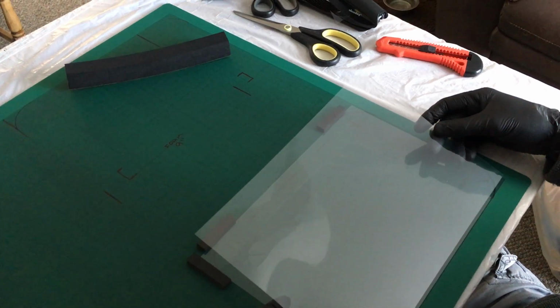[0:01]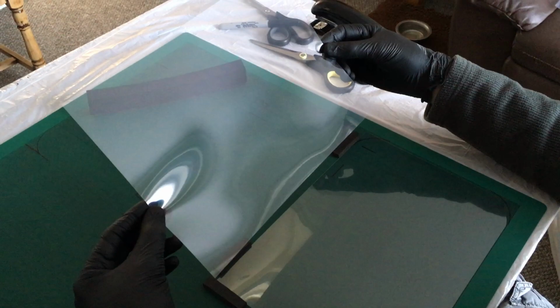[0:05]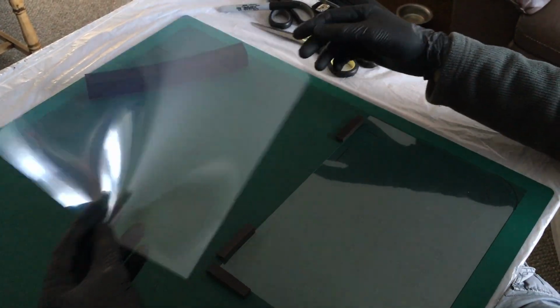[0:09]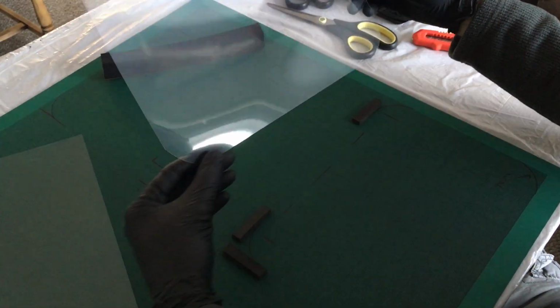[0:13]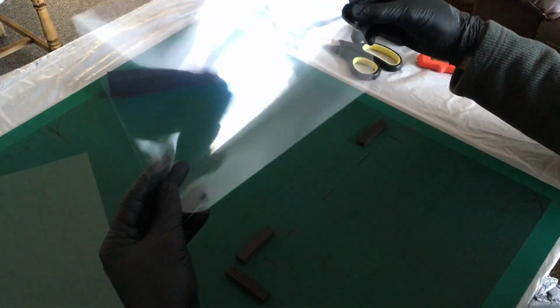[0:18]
Okay, so step one is you take your acetate sheet and you trim the bottom corners with an approximate 40-50 millimeter radius, so you achieve something like this, keeping these transitions as smooth as possible.
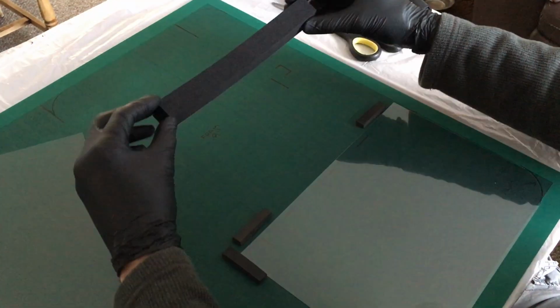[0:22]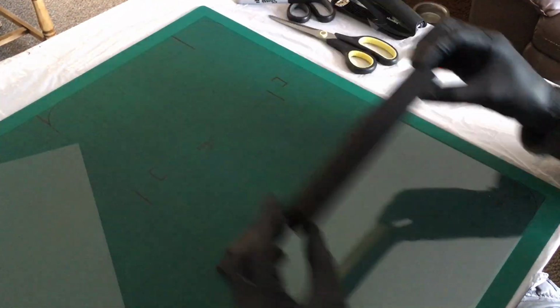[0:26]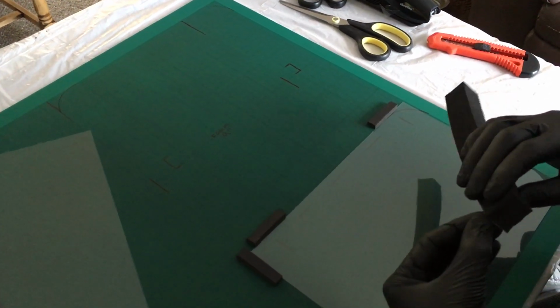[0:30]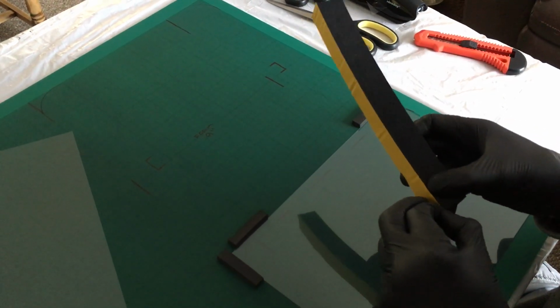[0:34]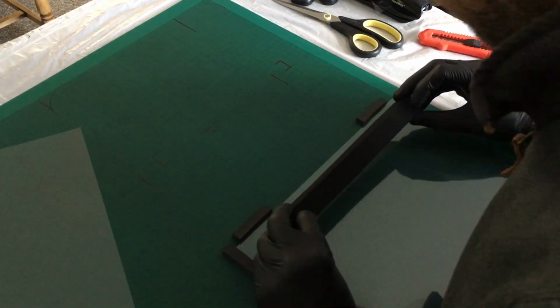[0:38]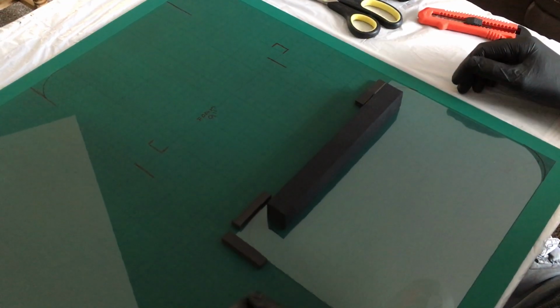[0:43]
Next, you take a 9-inch long piece of foam and you position that about 10 millimeters from the top edge and as central as you can be without being too fussy about it. So something like that's fine.
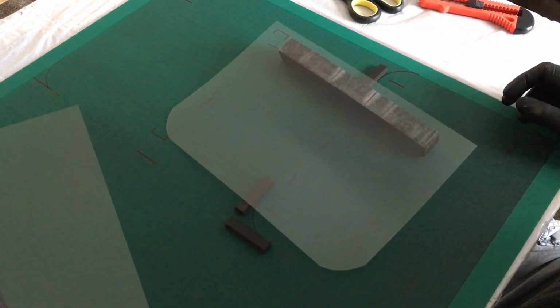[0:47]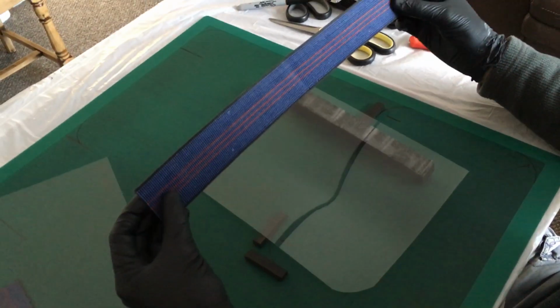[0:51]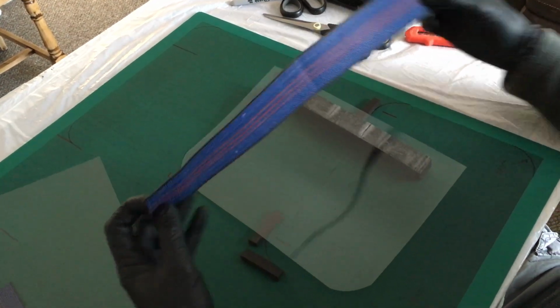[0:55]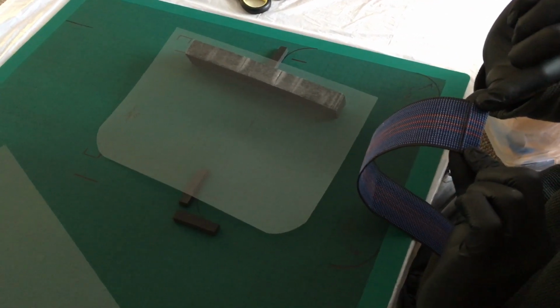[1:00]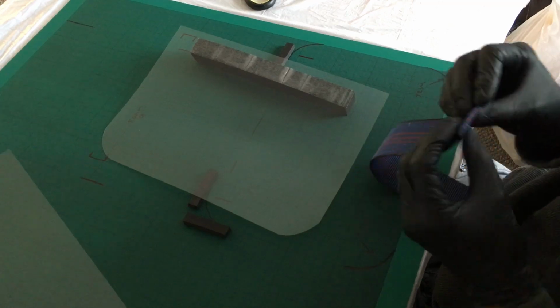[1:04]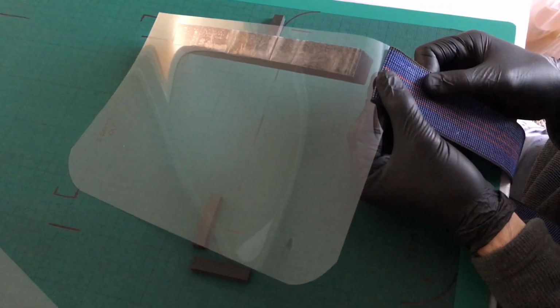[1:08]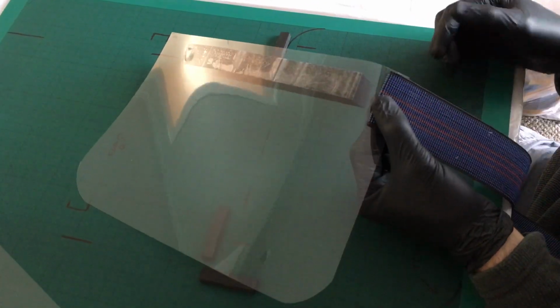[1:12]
You then take 16 inches, I believe it is, of elastic. I'll have to double check that. And you create a little return, it's probably about 15 millimeters. And then you place that on the front, top corner. I've been leaving a couple of millimeters at the top there.
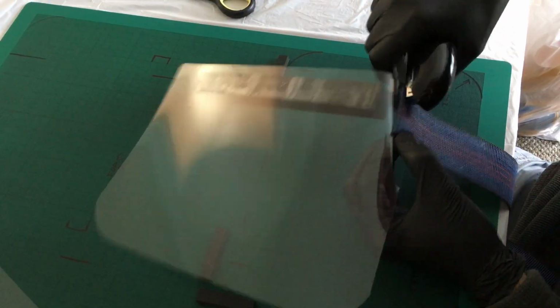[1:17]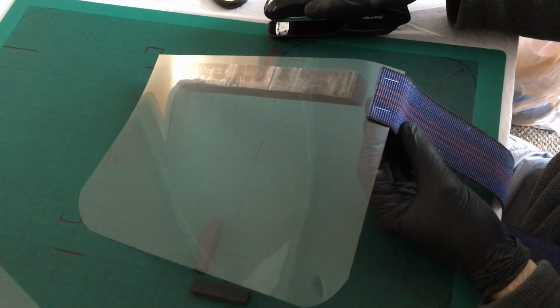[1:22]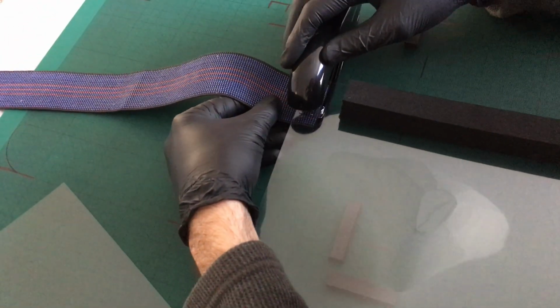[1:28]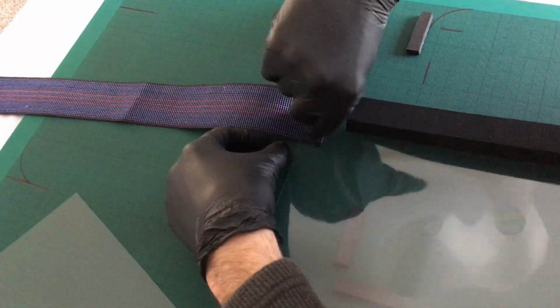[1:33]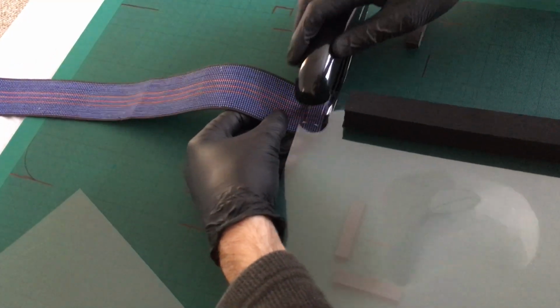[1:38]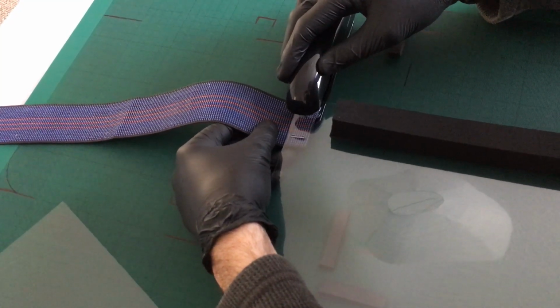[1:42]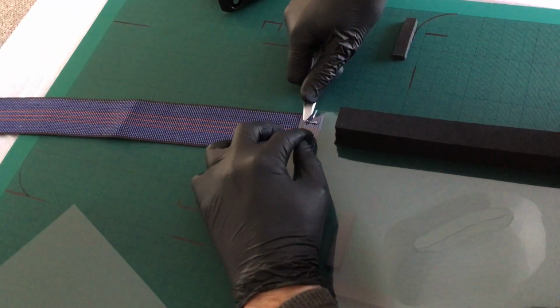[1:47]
And then you just want to get your first staple in, move along, second staple. And then what I've been doing is I've been double stapling over the existing to give it strength. It doesn't always work brilliantly. This happens sort of once in 10, maybe less than that, but occasionally you just have to go back over it, something like that. And then I get my scissors.
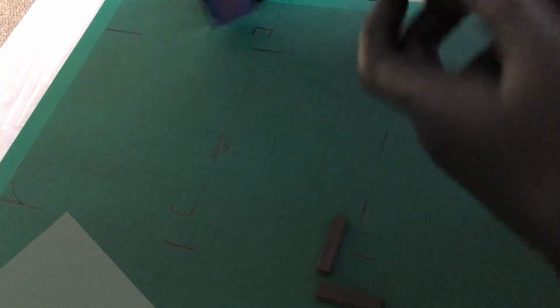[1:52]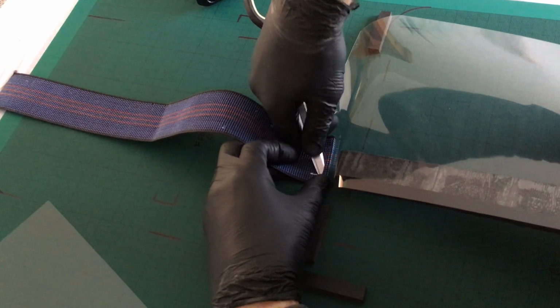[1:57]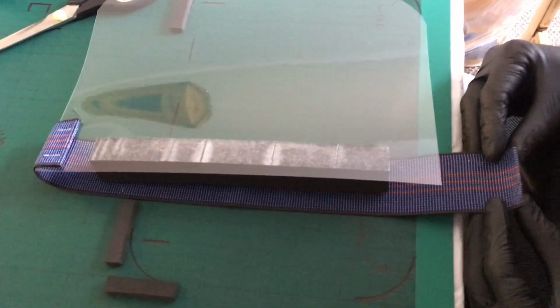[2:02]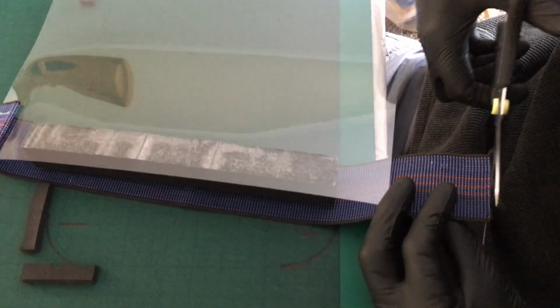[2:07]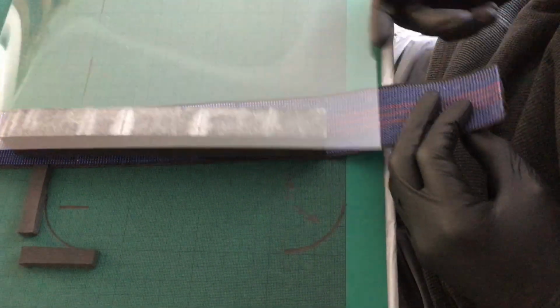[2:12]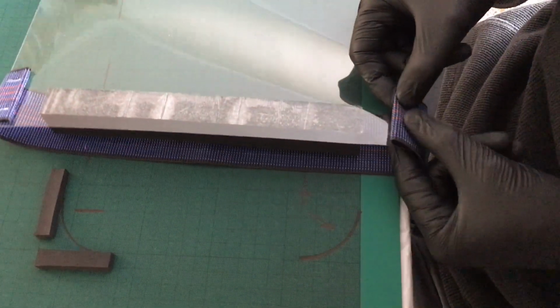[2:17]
I just make sure that the staples have returned properly. And then move on to the other side. So if, like I've got here, you'd see you've got a little bit of frayed material, just trim that off. Try and keep the visor as clean as we can. 15 mil return, I'd say just under 15. Again, position it slightly below the top there.
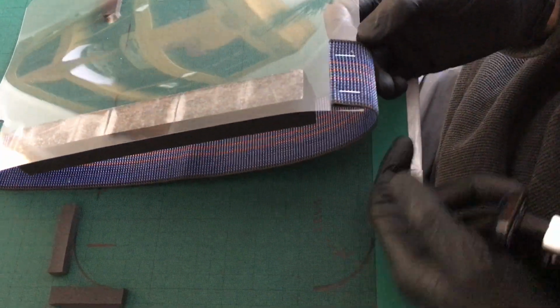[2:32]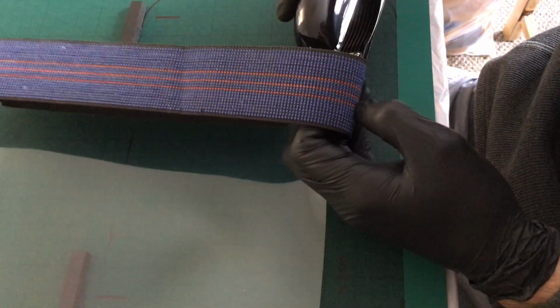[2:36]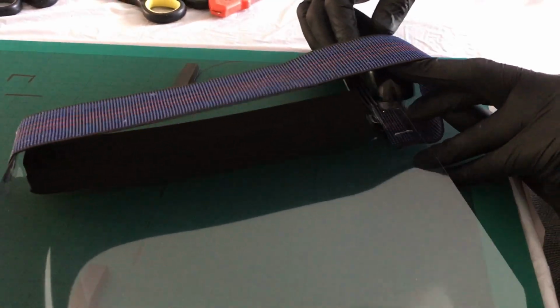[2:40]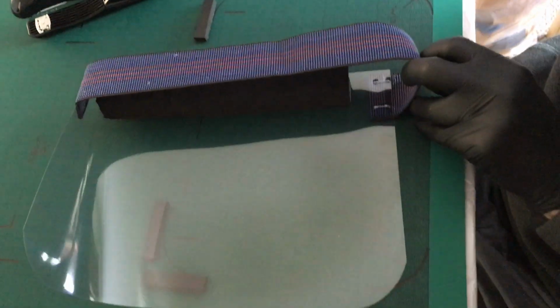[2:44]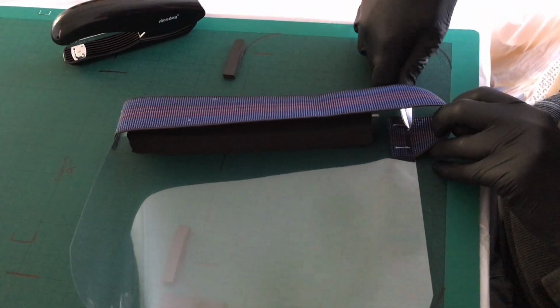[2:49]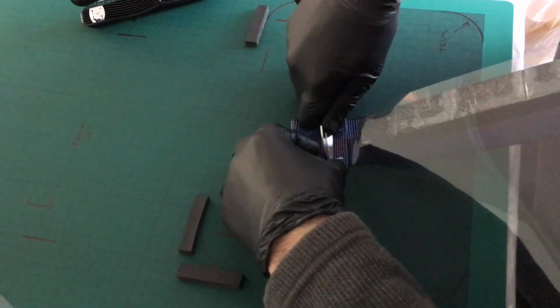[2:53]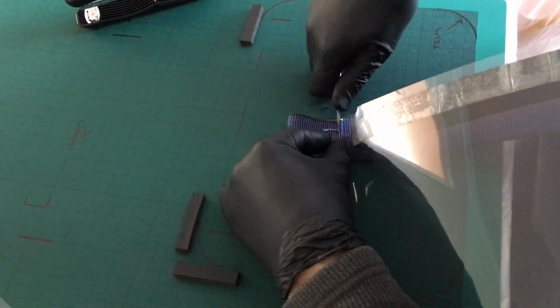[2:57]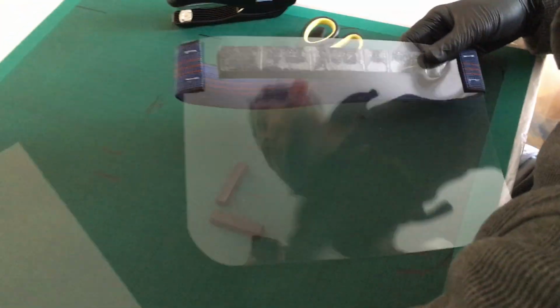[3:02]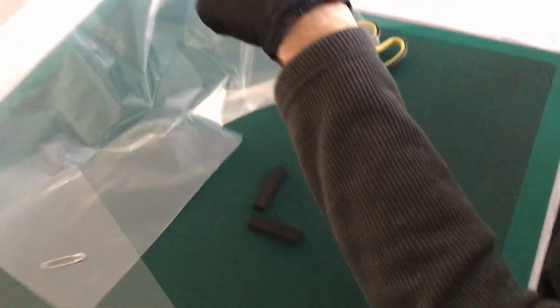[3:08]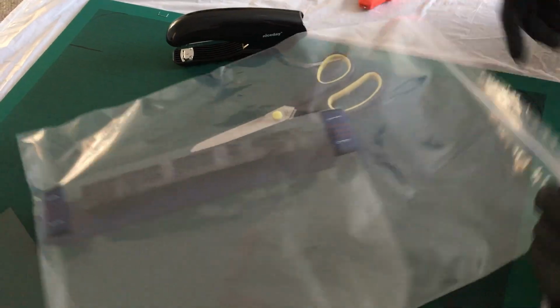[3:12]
One, two, and then again, where it gets a little bit fiddly is just getting in there to double staple, and then again just check that the staples are sitting nicely. As you can see, this one here hasn't, so just zip it over, finish nicely. That then goes into a bag with a safety pin. Done.